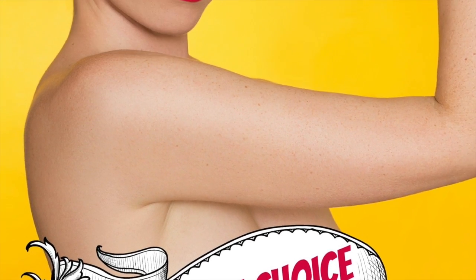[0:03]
So today I spent part of the day making drain bag holders. A lot of wonderful people have been giving me advice about what I'm going to need for surgery and after surgery, and the drain bag holders is something that several people have mentioned to me I should look into. But when I was looking them up, they're kind of expensive. It's like 15 bucks for something I'm never going to want to look at again. And just because I got cancer does not mean that I won the lotto as well.
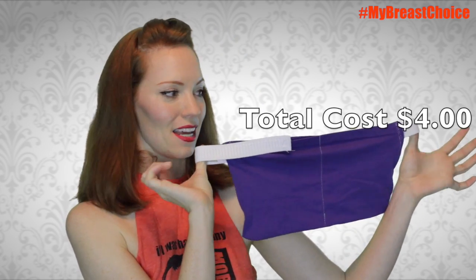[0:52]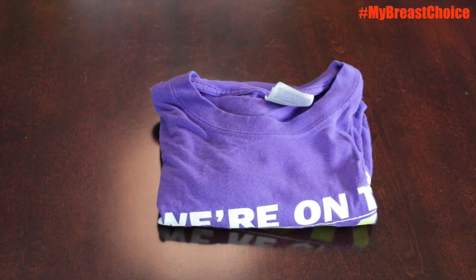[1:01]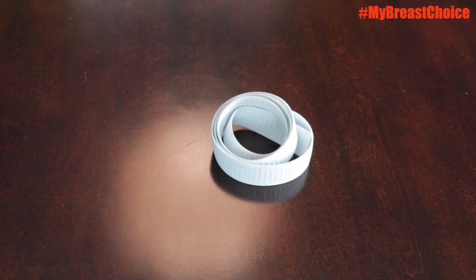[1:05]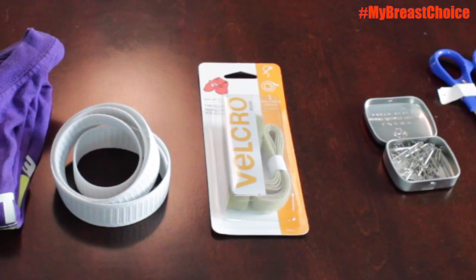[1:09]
In today's episode, I'm going to show you guys how to make your own drain bag holders. Like this. With an old t-shirt, some elastic, and Velcro. So here's what you're going to need for this how-to video. You are going to need an old t-shirt you don't want anymore, a pair of scissors, some elastic, Velcro, push pins, and a sewing machine. All right, let's get started.
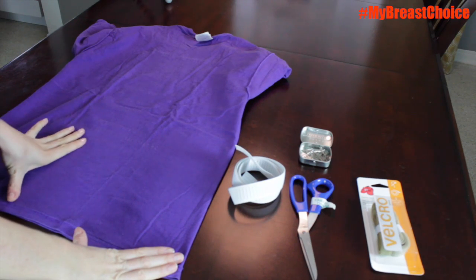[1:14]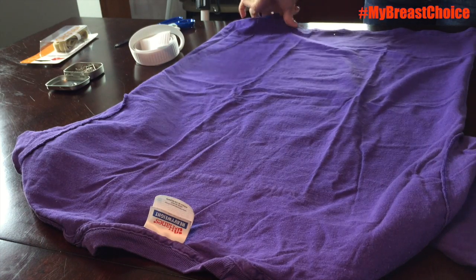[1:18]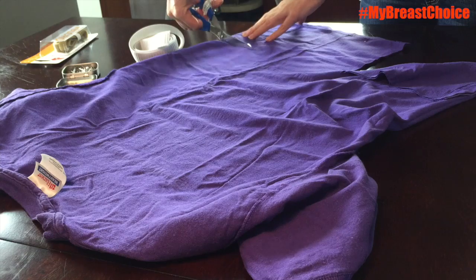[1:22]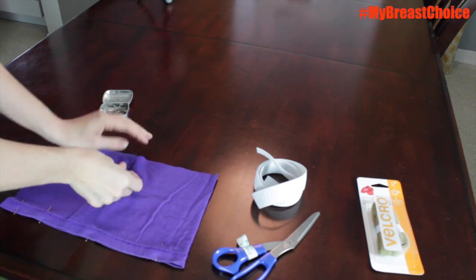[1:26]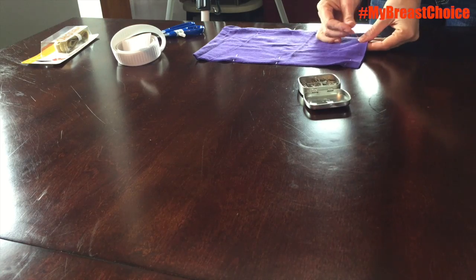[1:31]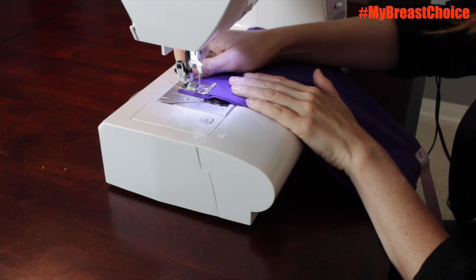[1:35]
Turn your t-shirt inside out and figure out how wide you want to make your drain bag holder. Now pin the edges of the t-shirt to ensure that they don't shift as you cut your t-shirt. I made mine about 6 inches deep and 11 inches wide. Now pin all of the edges of the cut piece of t-shirt so as you sew it through the sewing machine it stays lined up. I made a mistake here and actually pinned in my elastic too early, so instead just leave a 2-inch gap.
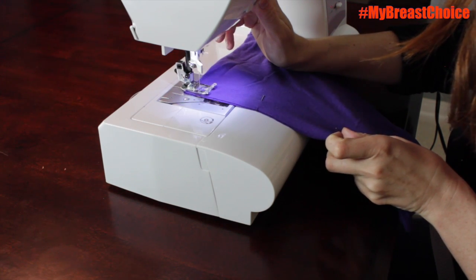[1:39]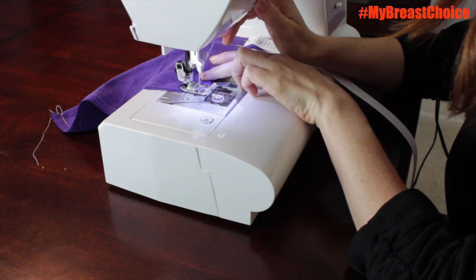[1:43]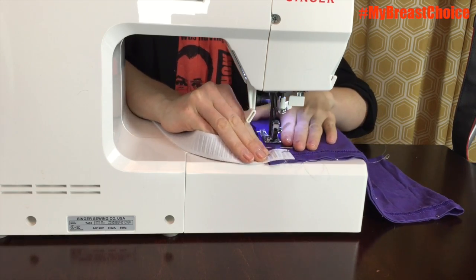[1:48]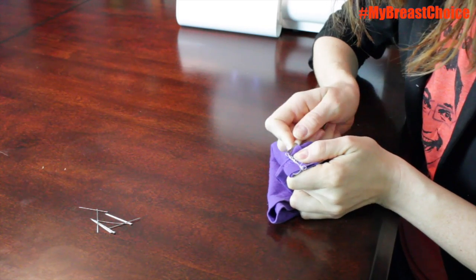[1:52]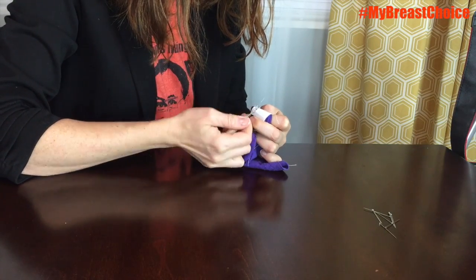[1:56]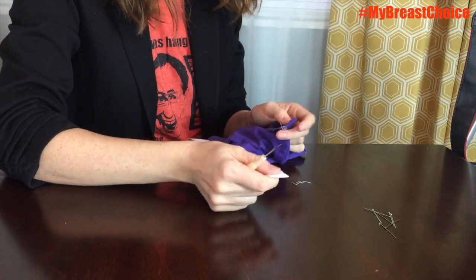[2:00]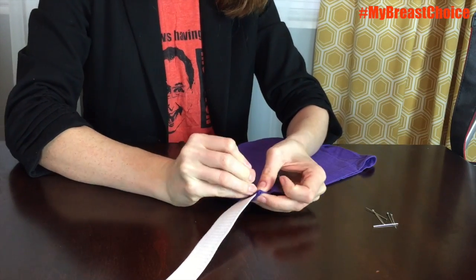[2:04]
I'm starting by stitching the bottom edge of my drain bag holder, but I'm running a back stitch just to make sure that it doesn't unravel. I'm also running a back stitch at the other end. By using the edge of the t-shirt, I made it so that I only had to sew 2 edges of this drain bag holder. You're going to turn your bag right side out at this point. This is where I realized I made a mistake and had to seam rip out my elastic. Your 2-inch gap is going to come in handy right here because you're going to attach your elastic into that spot.
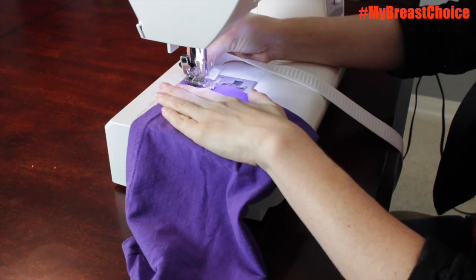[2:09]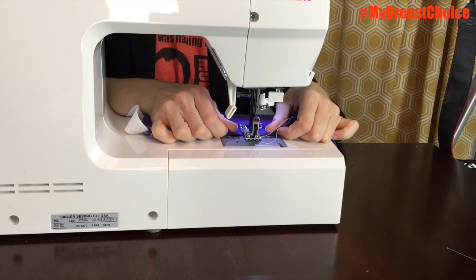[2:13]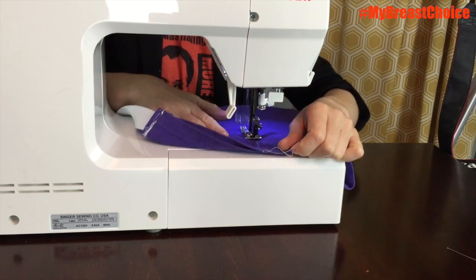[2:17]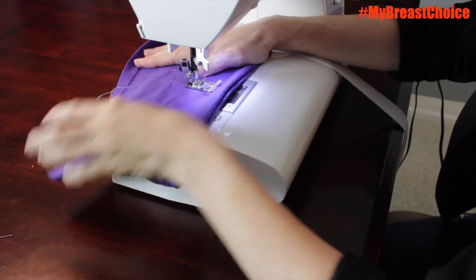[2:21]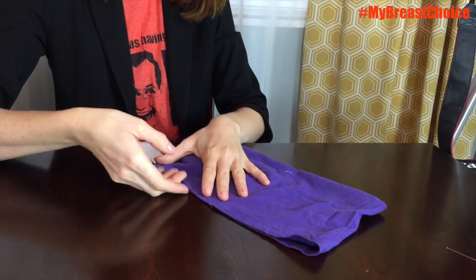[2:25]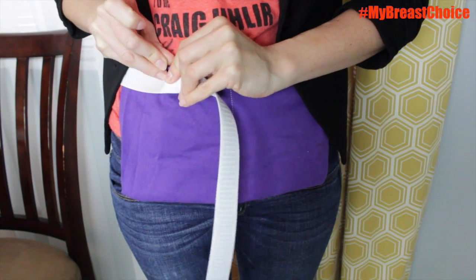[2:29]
There's going to be a lot of force placed on this seam, so run a back stitch. Now run a little stitch along the center of the bag just to separate out the 2 pockets. Time to measure out the elastic. I just put it against my waist and pinned where I wanted it to end.
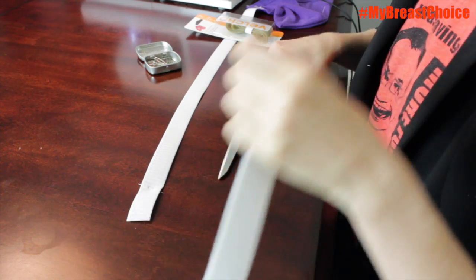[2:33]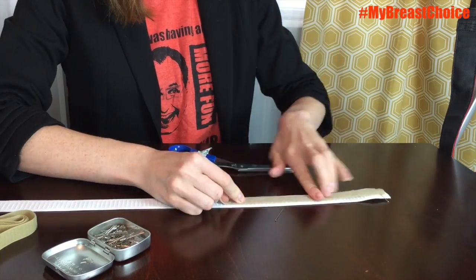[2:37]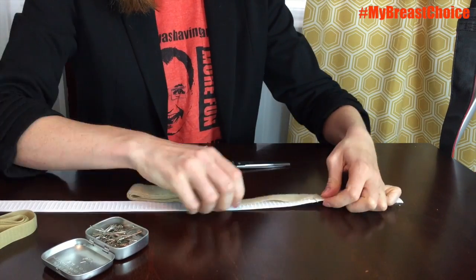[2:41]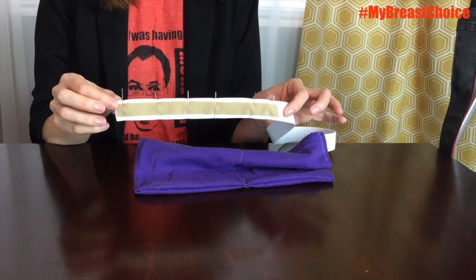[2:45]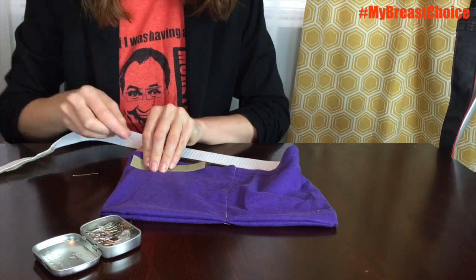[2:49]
I'm attaching the soft end of the Velcro onto the elastic because this is the part that's going to be touching my skin. I also made it a longer piece so that I could adjust the height of my drain bag holder. Keep in mind, for this whole project I actually never used a measuring tape. I wanted this to fit my body and I knew no one was going to see it, so I just eyeballed the whole thing.
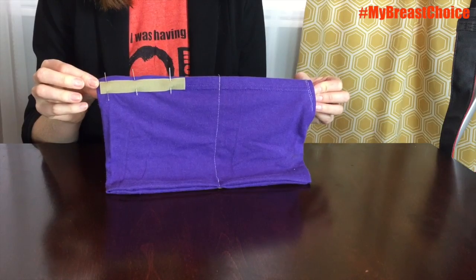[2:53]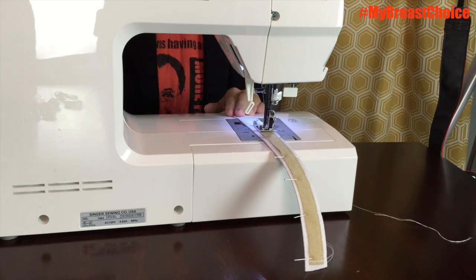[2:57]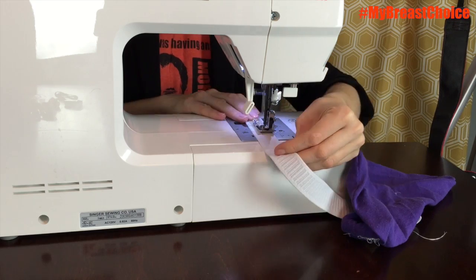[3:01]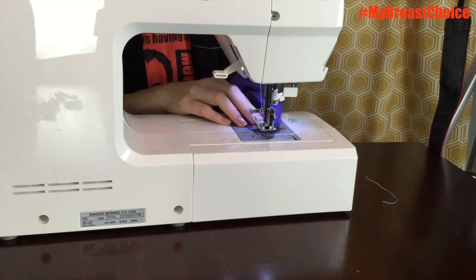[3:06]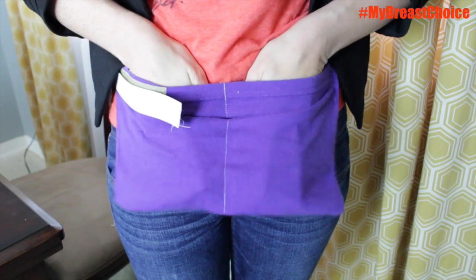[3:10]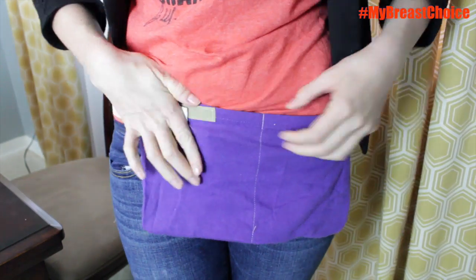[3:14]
Quick tip for attaching the Velcro. As you sew it, you can actually leave the needle down and then just spin what you're sewing. This way you don't have to keep taking it on and off your sewing machine. There we go, and a homemade drain bag holder for $4 with adjustable height. Let's see how it works for surgery.
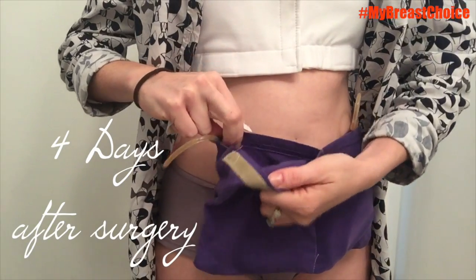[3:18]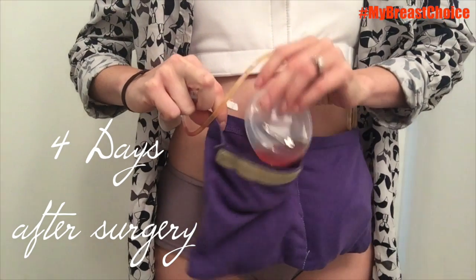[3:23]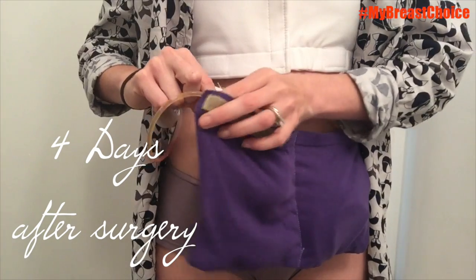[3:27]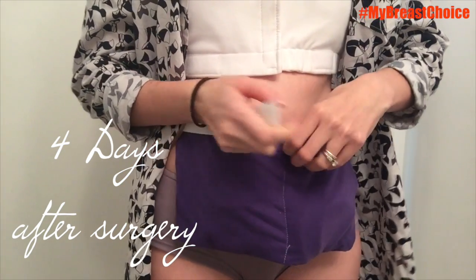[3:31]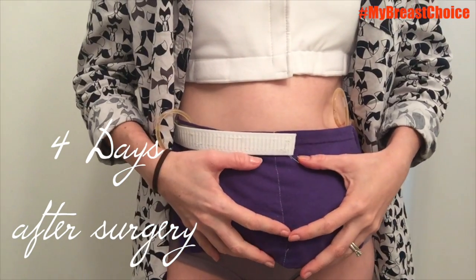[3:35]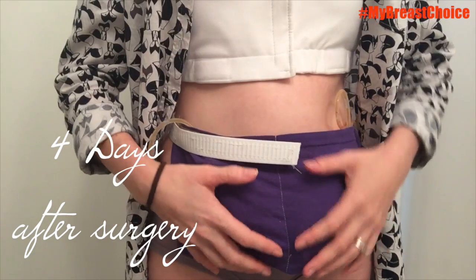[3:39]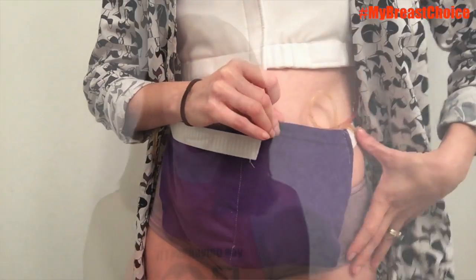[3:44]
Here is the drain bag holder. I'm so glad I made these. They hold the drain bags right in them, and then they Velcro. It Velcros up, so it's easy to maneuver. Hold everything in the center, so when I sleep, they're not falling to the sides. So when I use the bathroom, they're kind of held. I'm able to fit 2 in this side.
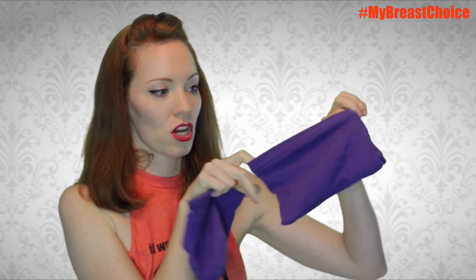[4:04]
Along with making this out of an old t-shirt, I also made extra pockets for pinning into my shirt or just pinning onto my little pouch. So I took the armholes from the t-shirt, sewed the bottom, and then added pins into it. So I can fit drain bags inside of here and put it wherever I want. So I can put it on a jacket, I can put it on anything. So literally I cut the sleeves off and I just sewed the bottom, and all of a sudden I have cheap, fast pockets.